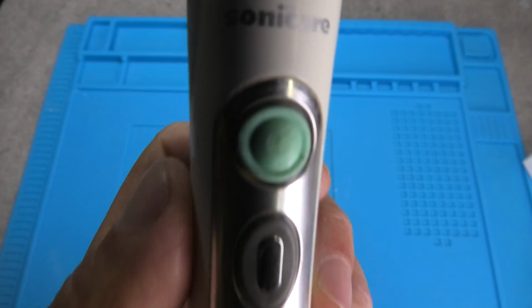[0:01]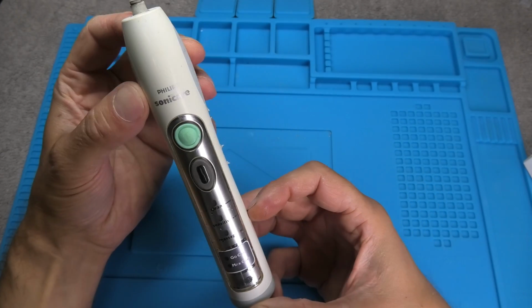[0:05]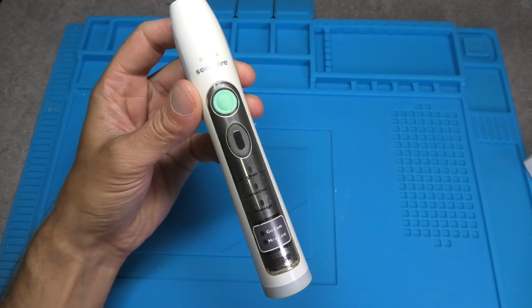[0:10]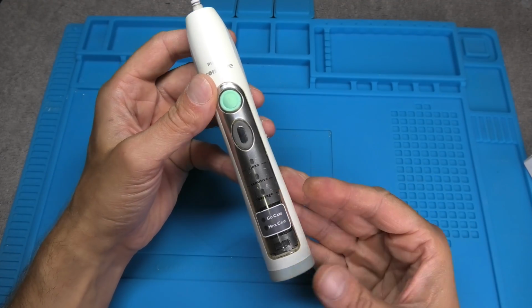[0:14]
Hey guys, so today I want to show you how to replace the battery on one of these Philips Sonicare electric toothbrushes. The process is pretty simple, it can be done in about 15 minutes, and the only tool that you really need is a soldering iron.
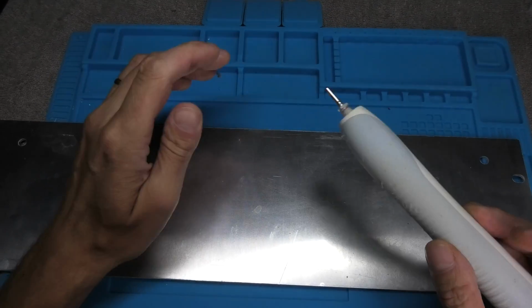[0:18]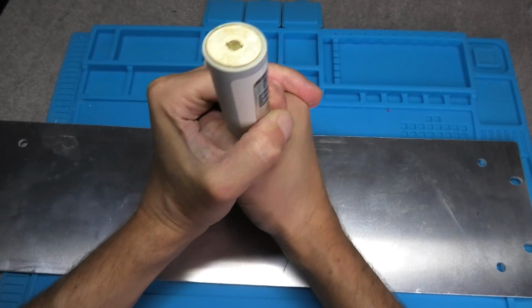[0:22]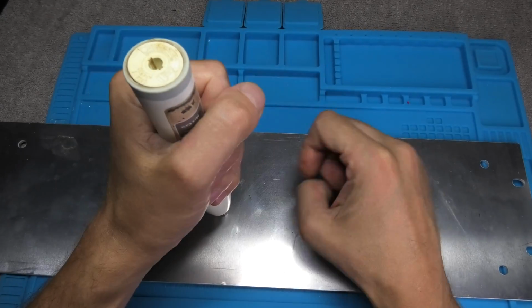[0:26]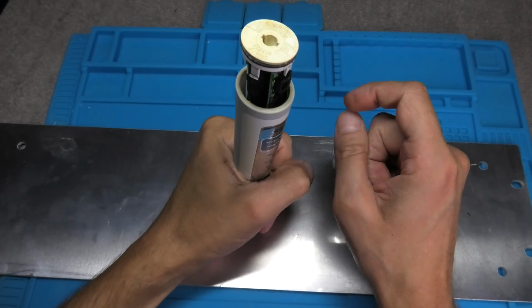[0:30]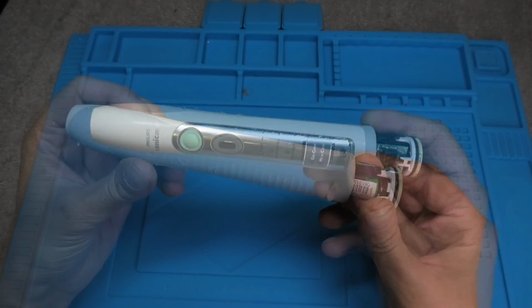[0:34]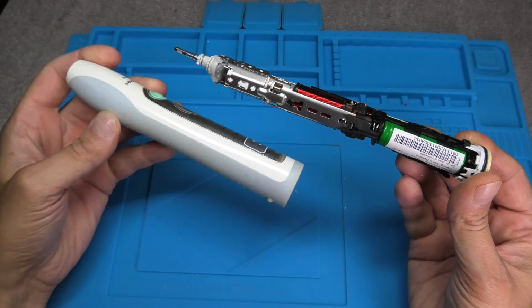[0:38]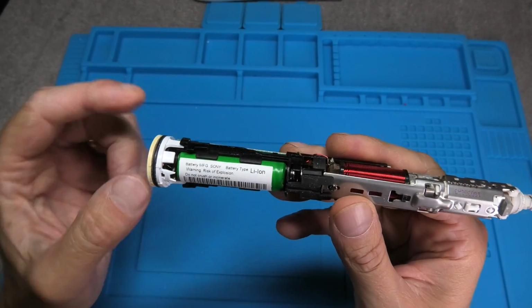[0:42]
So I start out by getting a hard surface that I can use to open up the toothbrush. I'm just using this metal plate here, I just put this on the ground. And then I press the top end of the toothbrush really hard onto this, and if this doesn't help, then you just use a couple of swings against this surface, and then eventually the toothbrush will open up at the bottom end, and then here we can pull all the insides right out of the housing.
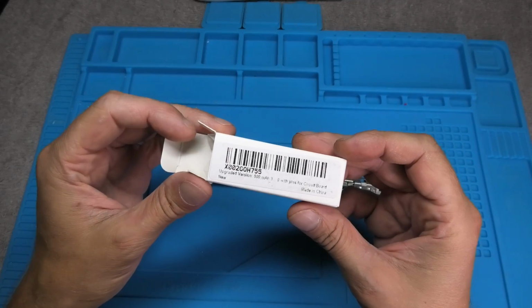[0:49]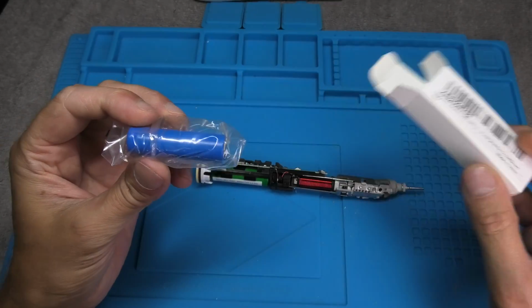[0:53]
And then here on the back end in green, that is the old battery that's not working anymore, so I'm going to take this out, and I have purchased a replacement battery. I'm going to post the link to this battery in the comment section below.
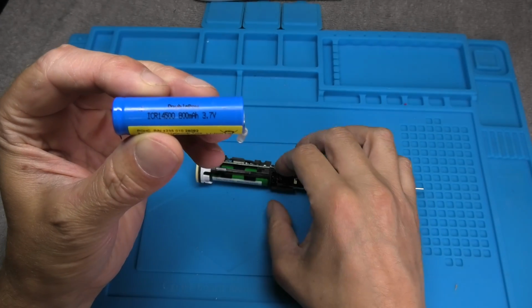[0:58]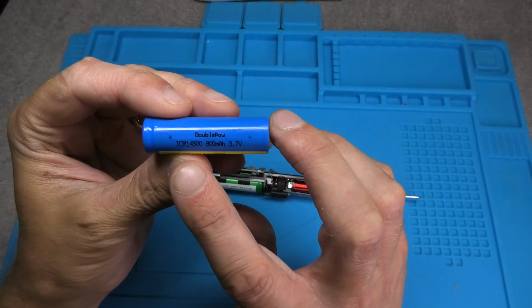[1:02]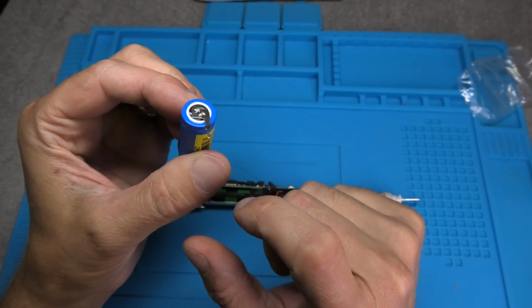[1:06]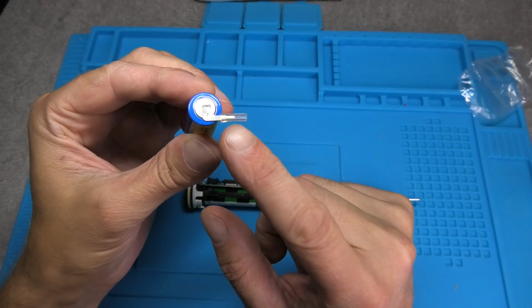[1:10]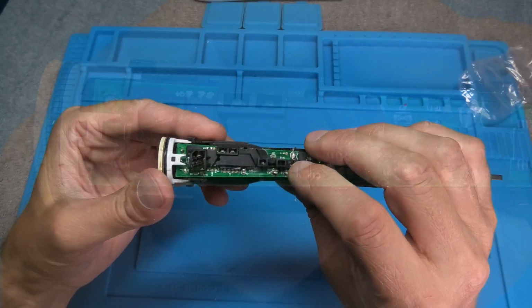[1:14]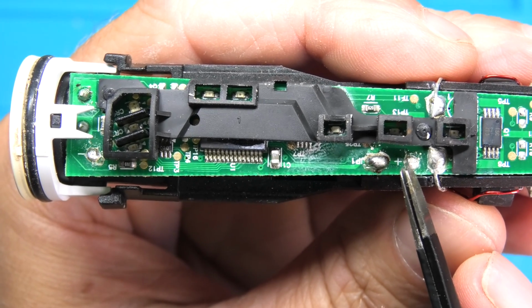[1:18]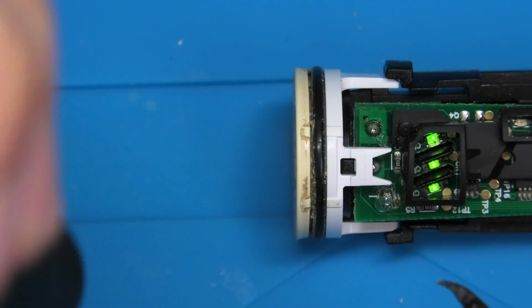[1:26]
You see here the type that I am using now is the ICR14500, and this comes with 3.7 volts. And you see here also this has these tabs on the side already pre-installed. Those are important that you have, because the battery is actually soldered right onto the PCB here. You see on the board this plus symbol and the soldering point there, and then here the minus, also with a soldering point. That's where the battery is soldered on.
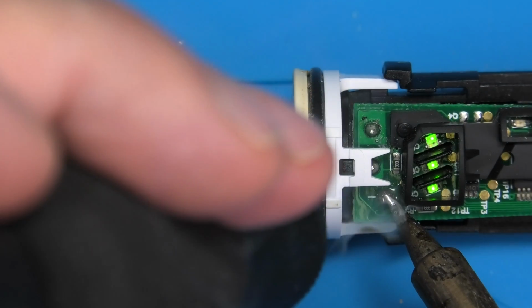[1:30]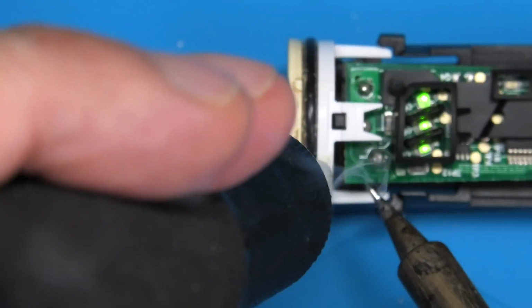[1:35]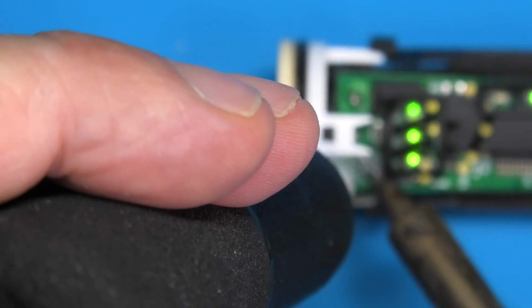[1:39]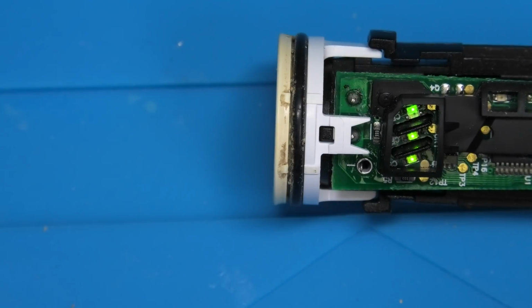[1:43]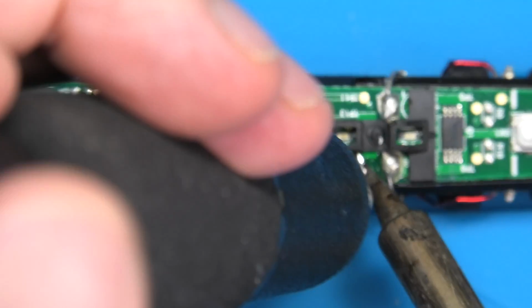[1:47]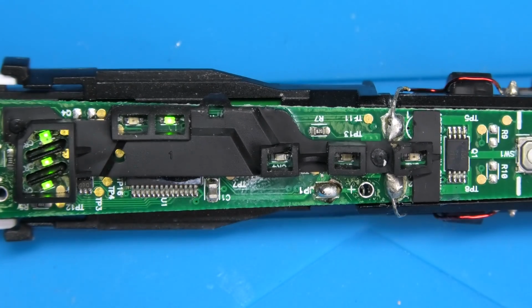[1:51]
So that means we're going to have to desolder the old battery. I'm just going to use my soldering iron with this little vacuum pump, and I'm going to remove the old solder. First I'm going to do this on the left side here on the negative pole, and then we're going to repeat this on the right side as well. And then we can already pull out the old battery.
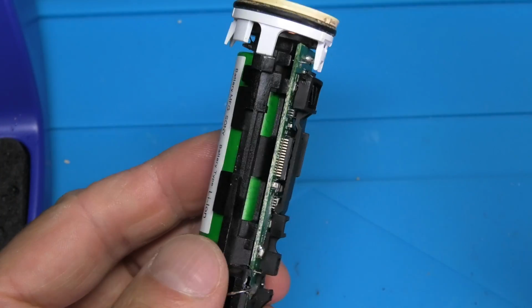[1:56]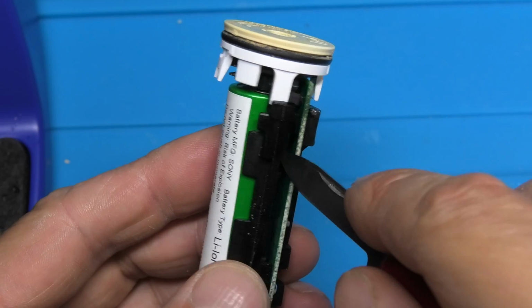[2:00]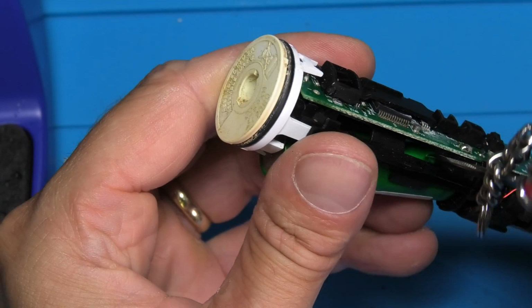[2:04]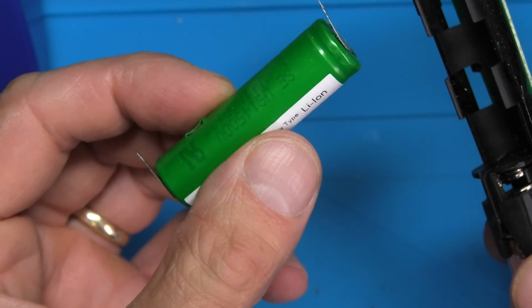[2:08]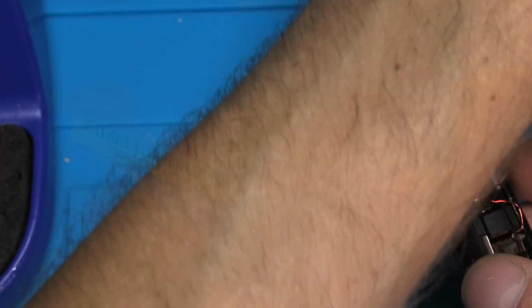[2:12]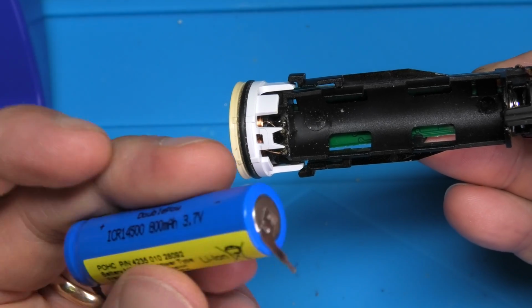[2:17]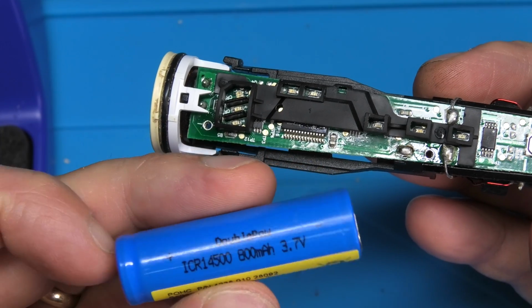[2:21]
At this point the battery doesn't just fall out, it is actually held in place by this plastic bracket here, so it's kind of clipped in there, so you have to pry from underneath to get this out. As you can see, the old battery looks exactly like the replacement, it's just a different color, so we're ready to install the new one. And of course we have to make sure we're putting it in the right way. This is actually pretty foolproof because the battery will only fit in one direction.
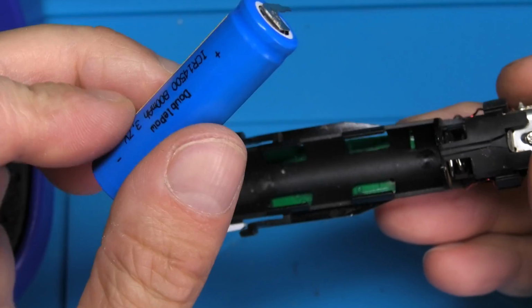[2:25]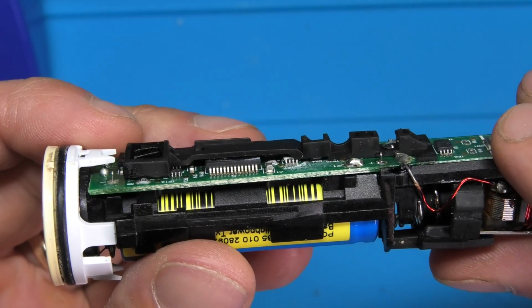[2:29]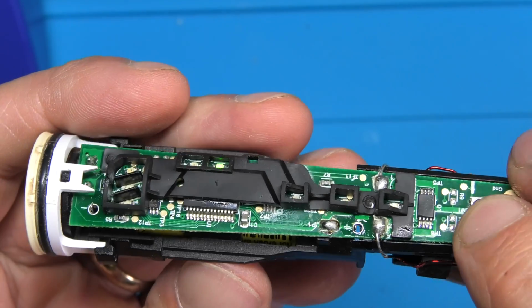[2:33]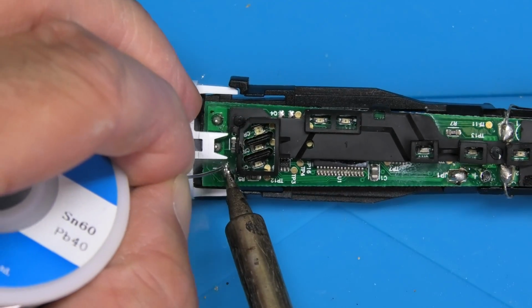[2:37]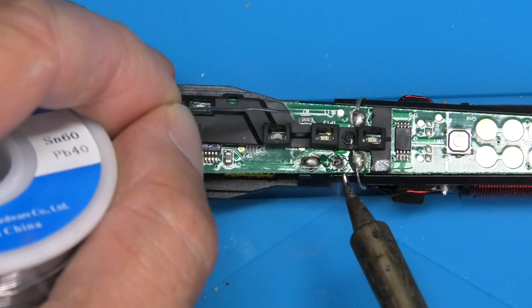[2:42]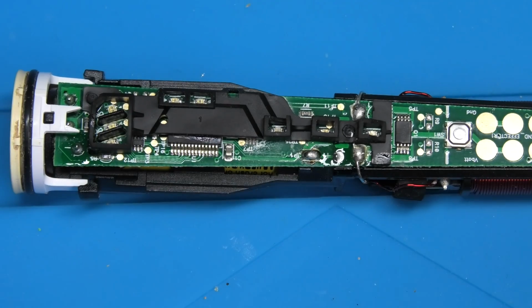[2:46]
You see here the plus side on the right side. So that's how this fits in and goes right through the PCB here. You see the pins now sticking out at the plus and on the left at the minus. And so all we have to do now is add some solder, make sure it's soldered in okay, so we have a good contact. Let me do that really quick. And then the last step is just to reassemble everything.
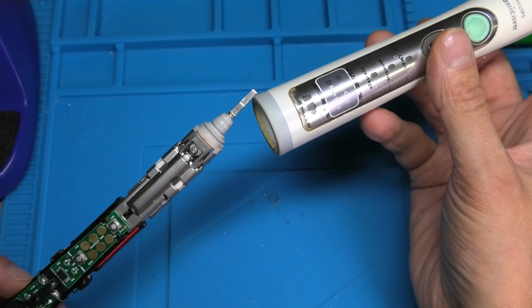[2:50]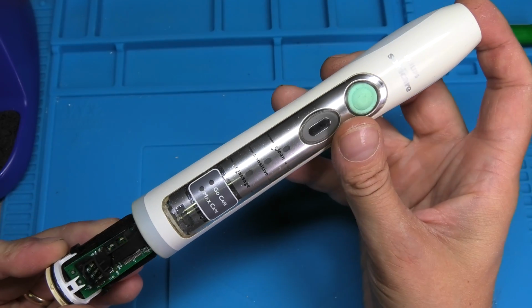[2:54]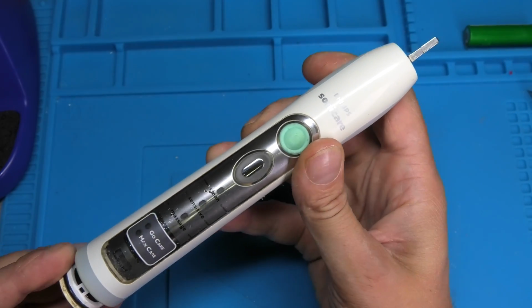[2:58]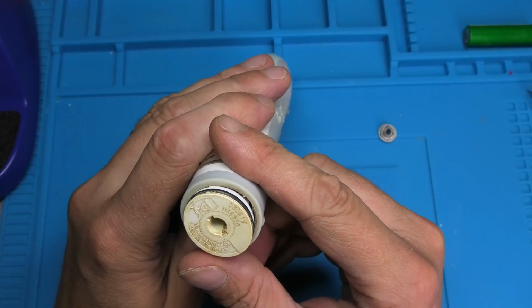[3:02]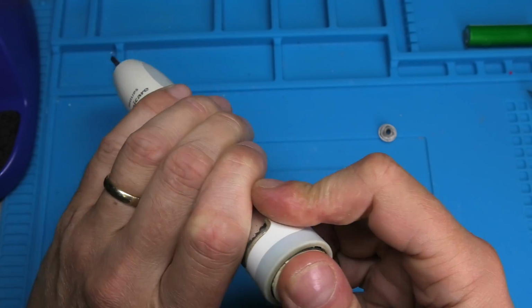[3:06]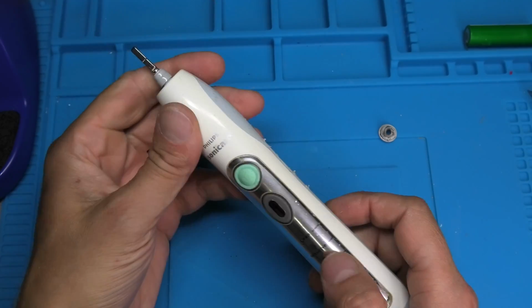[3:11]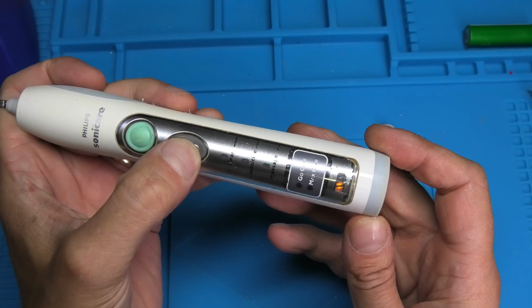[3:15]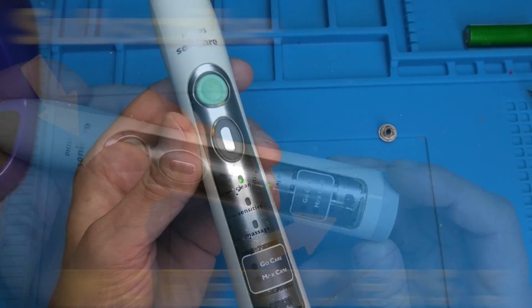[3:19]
So we're just going to stick the internals into the casing. You just have to make sure that you align this right, with the buttons and the LEDs facing the front side. You can also check this on the bottom end because of this oval, so it will only work in one certain orientation. So you just push this in there. It's relatively easy to push it all the way in, and it's going to seal all right. And then we're already done with the replacement of the battery for our Philips Sonicare toothbrush.